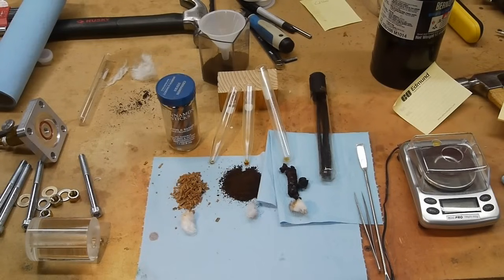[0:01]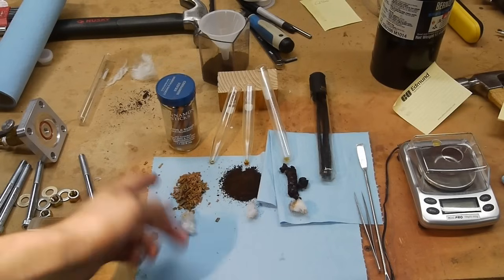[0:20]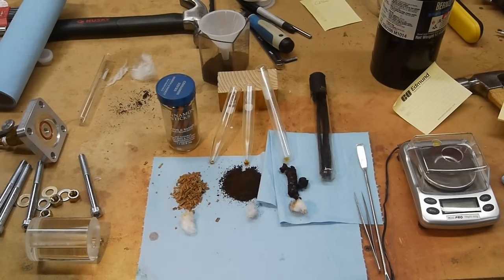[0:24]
Hey everyone, I've done some work with supercritical CO2 extractions before, but this time I wanted to build a device that didn't require having a tank of liquid CO2, which is something not a lot of people have. And also I wanted to try some different ingredients. So I tried cinnamon sticks, ground coffee, and chopped up vanilla beans.
As you can see, the yield is not exactly what you'd call impressive, but this actually isn't too far off from a commercial yield using the best supercritical CO2 extraction techniques. For vanilla beans, you'd probably only get about 5% extract. I actually found a paper talking about extracting vanillin or oleoresin from vanilla beans, and even they were only able to get about 7% at the absolute maximum. And with lower temperature and pressures, which is what I'm working with here, the number will be closer to 1 or 2%.
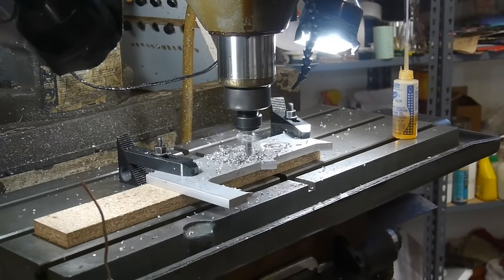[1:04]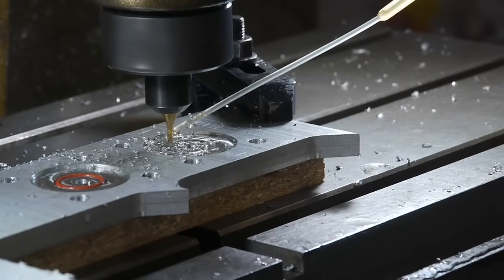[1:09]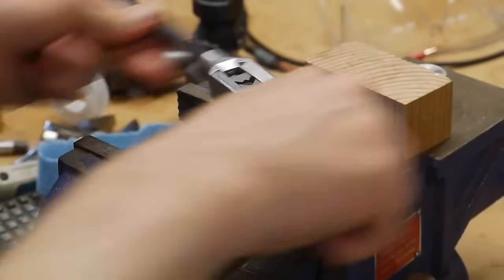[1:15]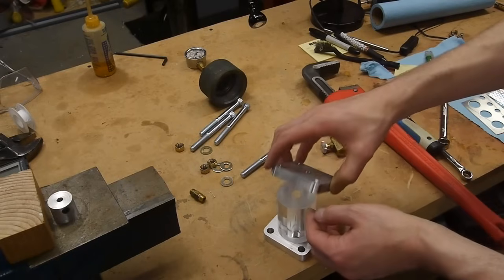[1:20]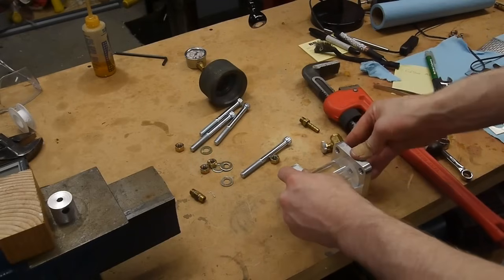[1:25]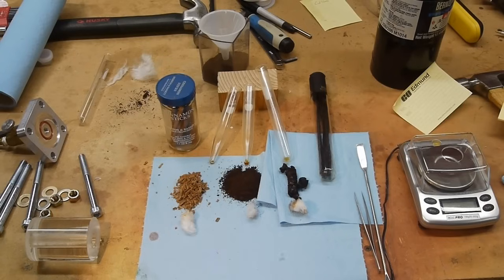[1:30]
I built the extractor by machining a piece of aluminum into two end plates, and I carved a gland for an O-ring in either plate, and then tapped the center hole with an 1/8-inch pipe thread. I then used a few 3/8-inch diameter bolts to hold the two end plates together, and I used a piece of acrylic with a 1/2-inch hole drilled in the middle as the chamber itself. This is really much better done with metal. Stainless steel would probably be the best material to choose, but I really wanted a clear material so that I could see what was going on in the extraction chamber.
One problem with using acrylic is that the supercritical CO2 actually penetrates into the plastic itself quite easily, so you really can't leave this set up for a long time, like a day or two, to get more oil extracted from your ingredient, because you'd actually end up extracting a lot of the plastic itself.
I searched for quite a long time looking for a chunk of glass that would be big enough to hold this amount of pressure, and the closest thing I could find was steam boiler gauges to show you the water level inside a boiler, and what they consider high pressure is about 600 psi, which is not really enough for this application. This thing will be working at about 1500 psi minimum, and ideally it would be more like 3 or 4000 psi.
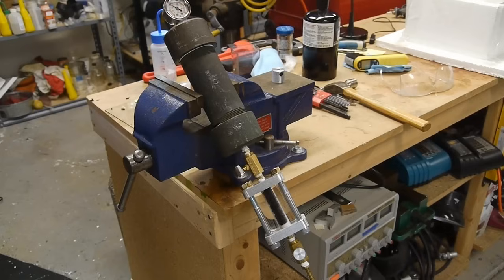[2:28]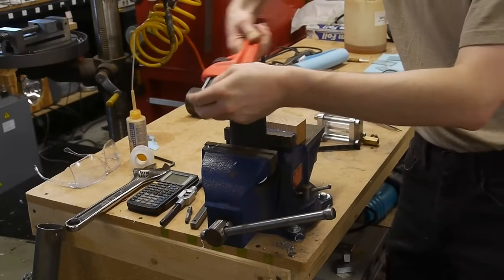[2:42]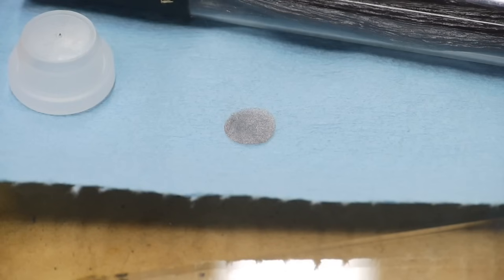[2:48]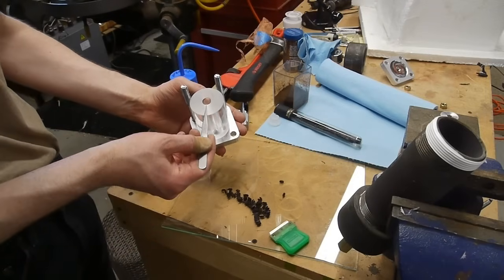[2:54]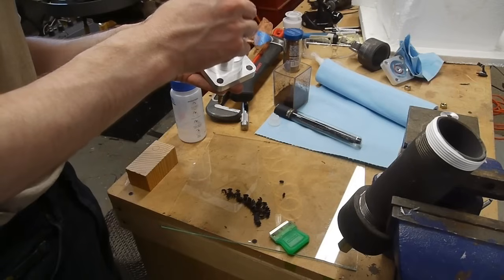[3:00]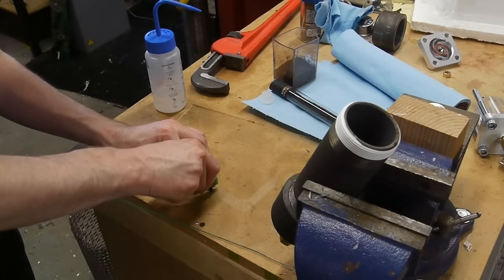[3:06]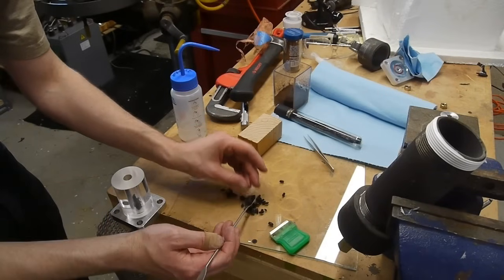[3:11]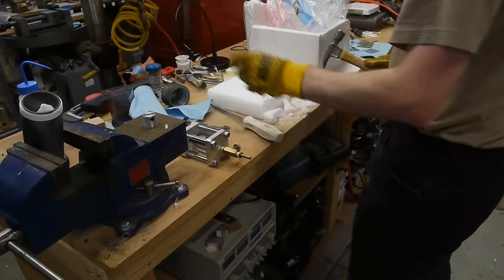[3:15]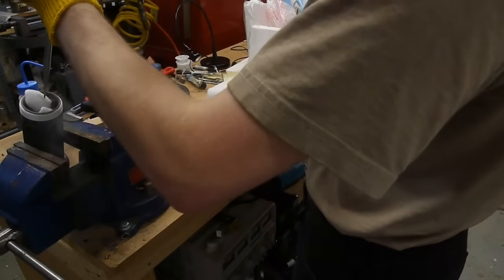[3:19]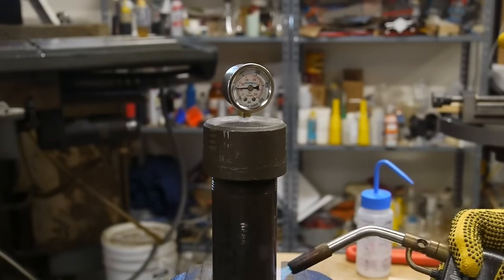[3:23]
I cut up about 1.5 vanilla beans into small, like 2 millimeter long segments, and packed them into my extraction chamber. I then hacked up a piece of dry ice and packed the large steel pipe full of it, and then screwed the top on and applied heat to melt all the dry ice into liquid inside the chamber.
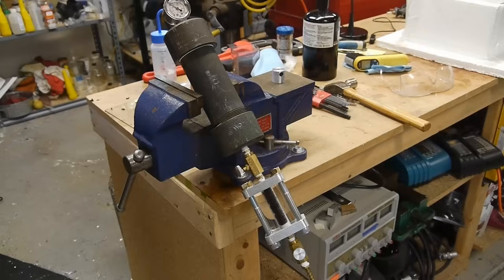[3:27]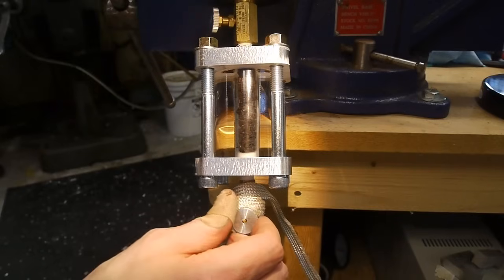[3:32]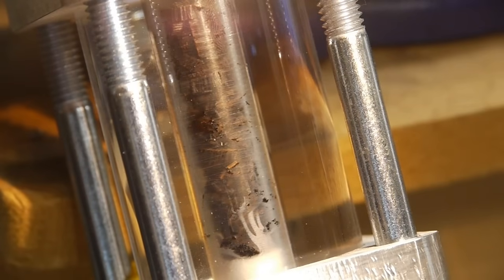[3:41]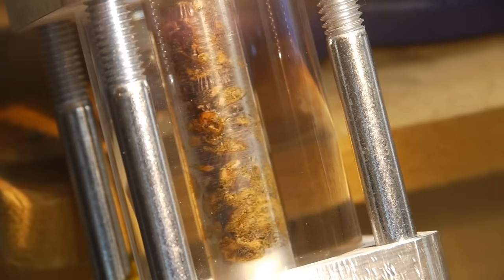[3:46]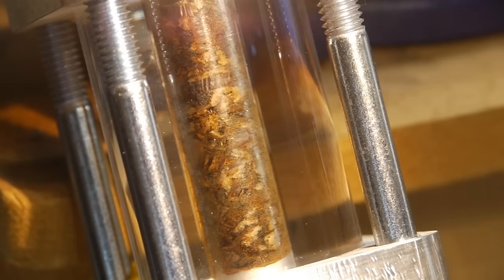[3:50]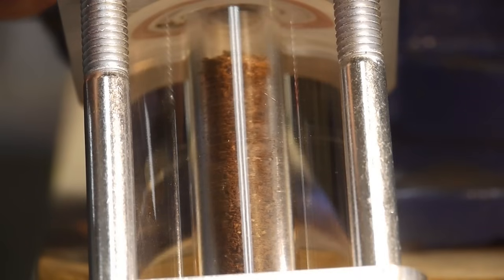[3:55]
I tried a few different flow rates, but knowing that my acrylic extraction chamber really shouldn't be exposed to CO2 for a long time, I didn't want to use time periods of like an hour or so. So I was shooting for mostly about 5 to 15 minutes of extraction. What I would do is set the bottom valve just high enough so that there was a small flow rate moving through the vessel, and the top valve was completely open during this whole process, just so that the supercritical CO2 could flow from the top chamber down through the material and then out the bottom.
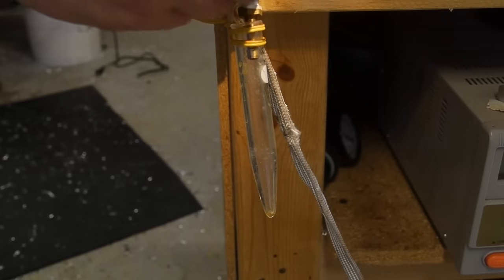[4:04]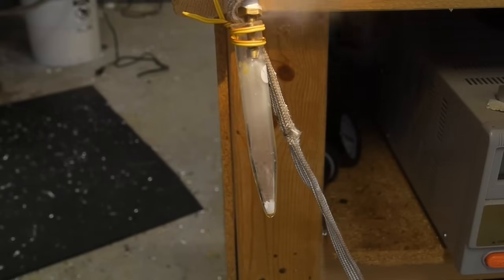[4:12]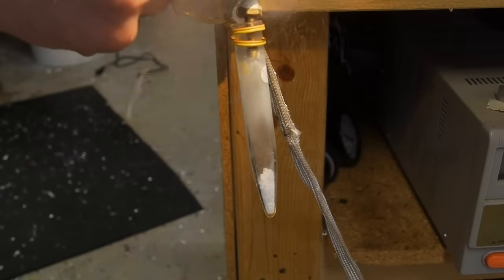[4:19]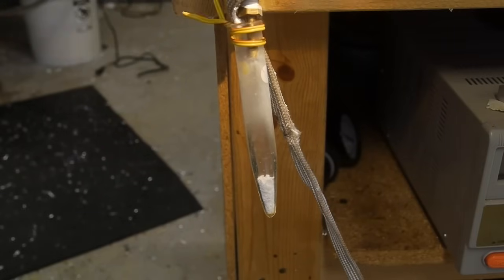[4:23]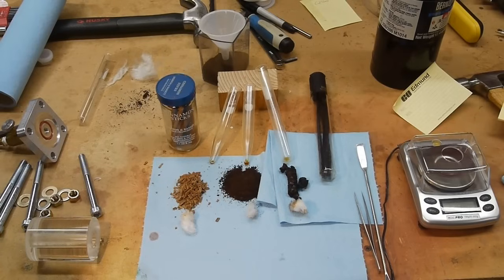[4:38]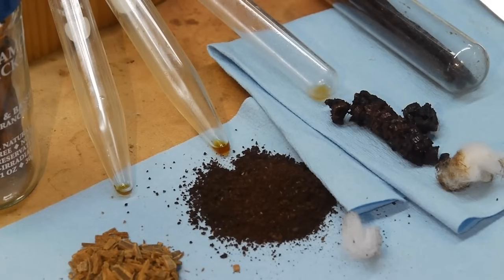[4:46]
To catch the yield, I just put a test tube underneath the pipe fitting at the very bottom. What would happen is CO2 would come out and then freeze into dry ice, and I would occasionally heat the test tube just to keep the dry ice from building up. With really low flow rates, the amount of dry ice production wasn't much of a problem, and just ambient temperature was enough to melt it. I added a flexible heater to the valve, since the decompressing CO2 draws so much heat the valve would actually freeze up pretty often, so a small electric heater prevents that from happening. After I used up all of my CO2, I took the test tube over to the centrifuge and ran it for just a minute or two, just to move the contents down to the tip.
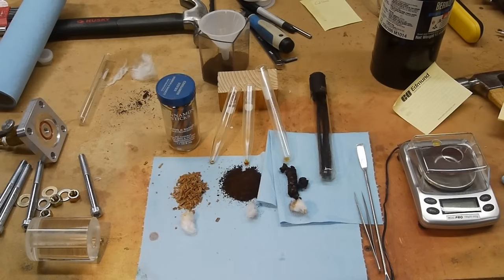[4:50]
So there's a few more things to work on. Ideally, like I say, the chamber should be stainless steel or something else, so that the pressure and temperature can be higher, and also so that it doesn't dissolve into the supercritical CO2. You could actually have something that would be long-lasting. But the basic idea is here, where you'd pack a reservoir full of dry ice, and the dry ice you can get anywhere, even grocery stores have it now, and then seal it all up and do your extraction that way without any unusual equipment.
I think one problem will be the overall yield. So really, you're only going to get a few percent of mass of what you start with, so your extract is extremely concentrated, and I'm not really sure how you would use it. If you were going to use it in cooking or maybe perfume manufacture or something like that, it would have to be very small quantities involved, or the chamber would have to be much larger than I've designed it. Maybe using stainless steel, the extraction chamber could be 5 or 10 times as big.